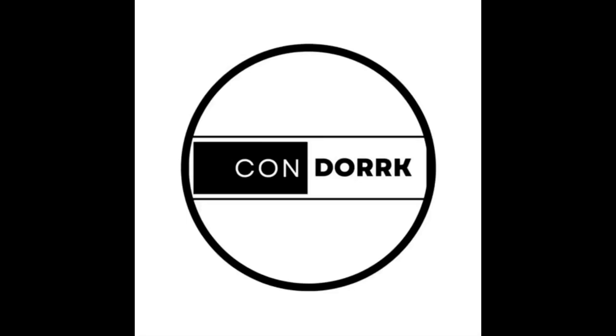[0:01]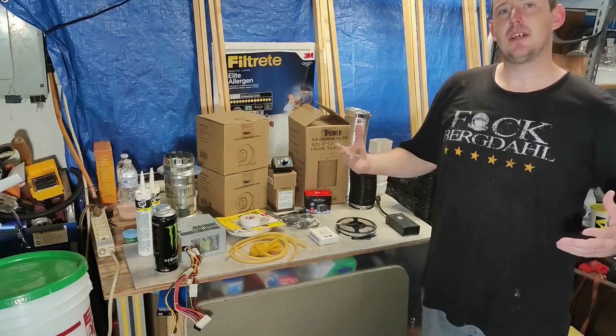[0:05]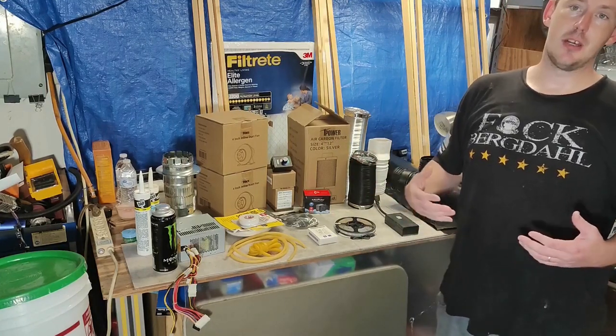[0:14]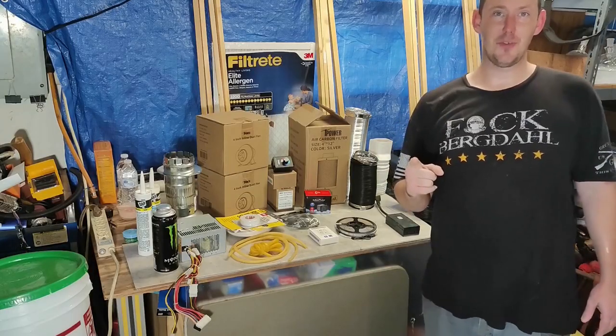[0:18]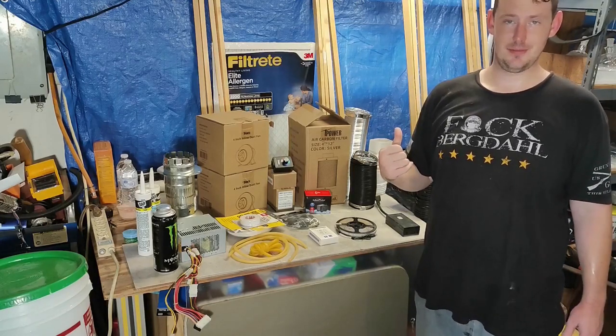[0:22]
So you finally got tired of the cops showing up over weird smells coming out of your garage or your closet. And you might be thinking, well, Connor, I want to practice chemistry. I just don't have the space or the supplies. Well, that's where a fume hood comes in handy. And today, I'm going to show you how to build one really cheap.
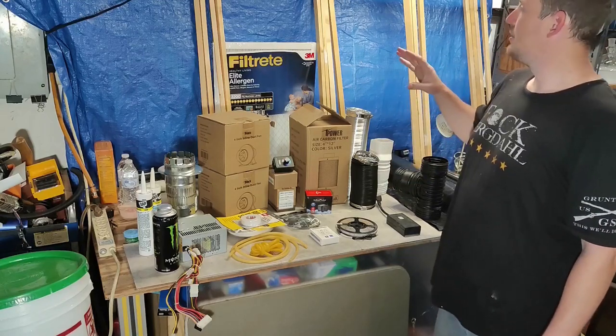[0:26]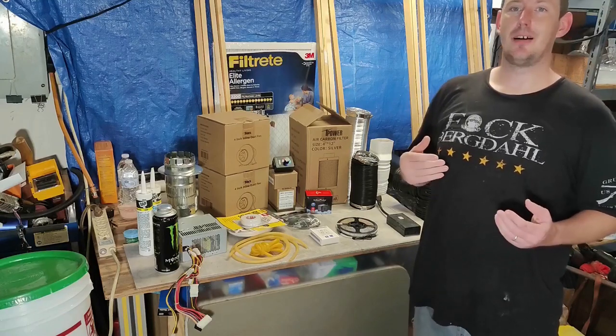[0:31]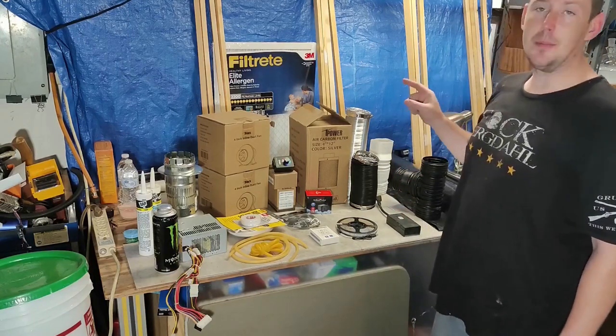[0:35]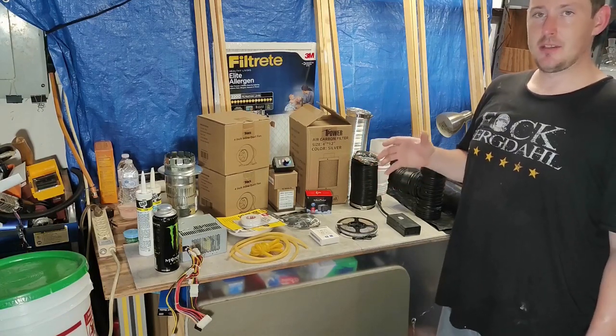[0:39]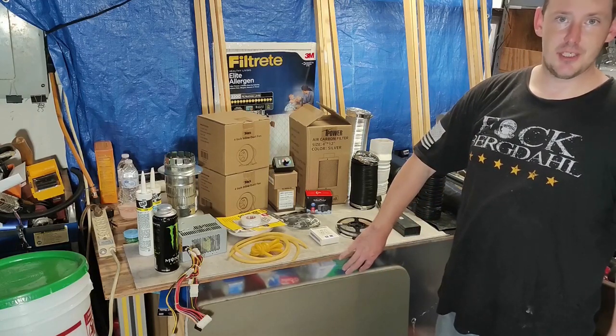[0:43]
A couple basic things you're going to need are different sizes of wood. If you can get a fully enclosed cabinet, that's great. I don't have it right now. So instead, I'm just going to be framing in a wood box that's about 3 by 3 by 5 feet, and then enclosing it in plastic and plexiglass or Lexan for the front.
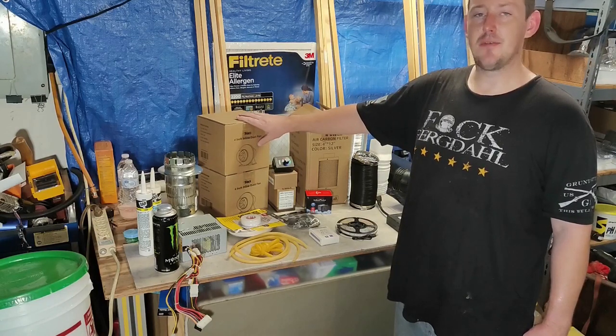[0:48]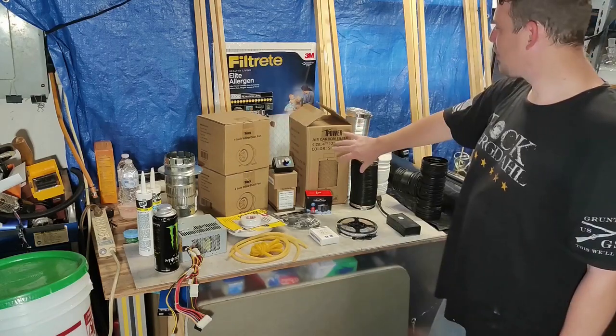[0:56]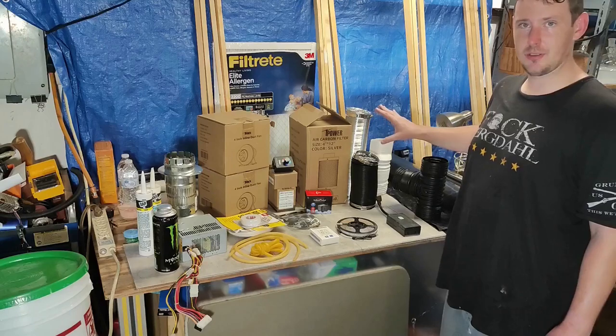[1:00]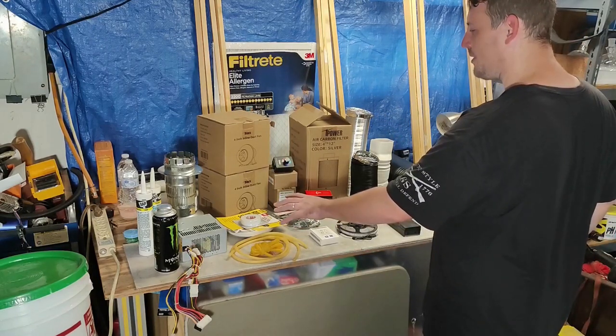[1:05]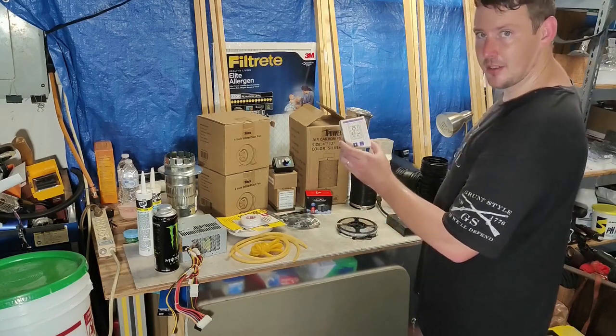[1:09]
You're going to want a fan or two. The higher the CFM flow, the better. Airflow is everything when it comes to a fume hood, because without moving air, you're just doing chemistry in a box. I have a carbon filter. I've got about 38 feet of ductwork to route it out where I want it to go. I have the rubber window seals, LEDs and mounting tape, a thermometer and hygrometer to keep track of what's going on inside the fume hood.
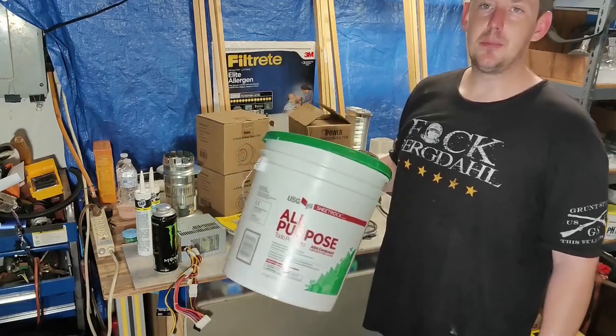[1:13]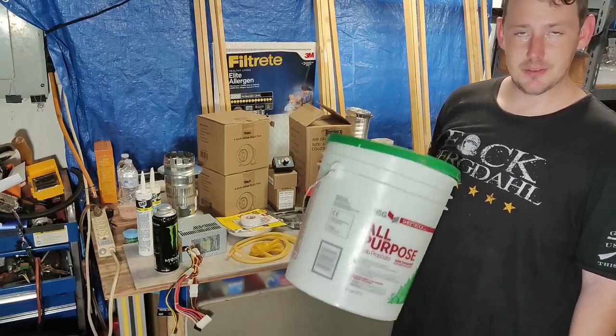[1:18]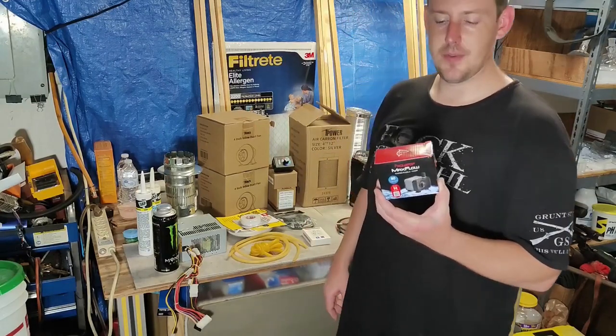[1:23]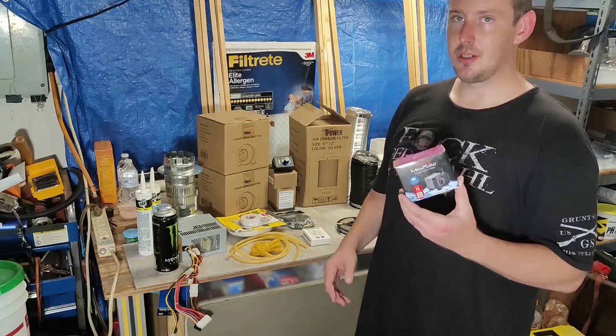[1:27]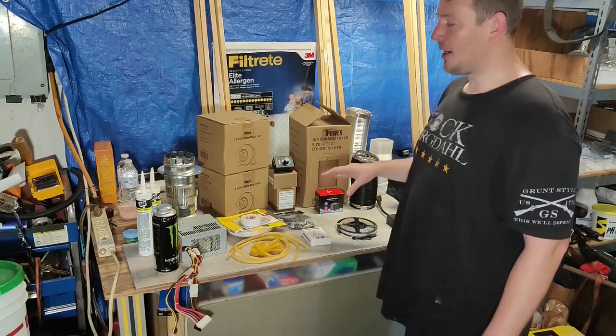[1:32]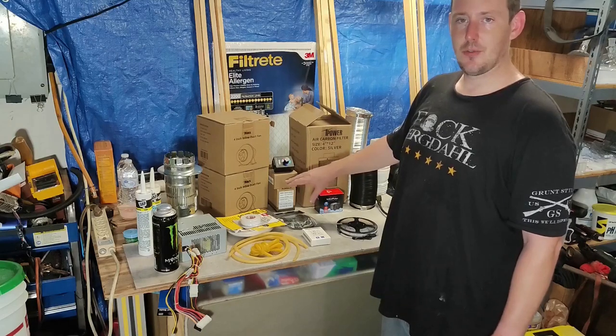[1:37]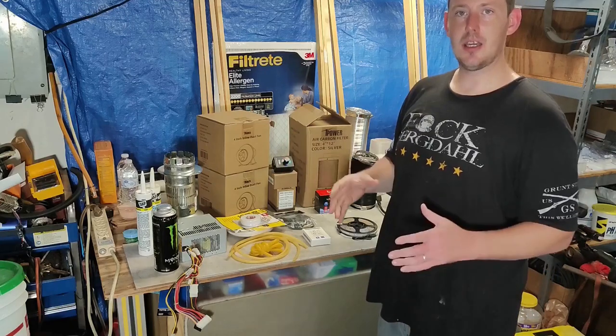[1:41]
You're also going to want a clean bucket. If you want to run clean water in and out, you're going to need a vessel to keep it in. So I'm going to be using this. And I also picked up a new pump. This one flows about 80 gallons per hour, which is good enough for most things I'm going to want to do. In addition, I picked up a couple extra things. I have a fan speed controller, I have a temperature controller, thermocouple, and some heating tape, so I can make a heating mantle, and I'm going to be using that in a different video later on.
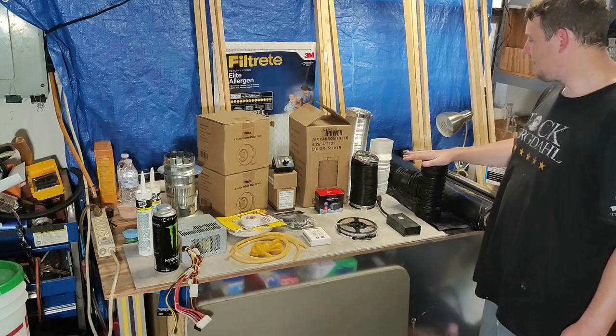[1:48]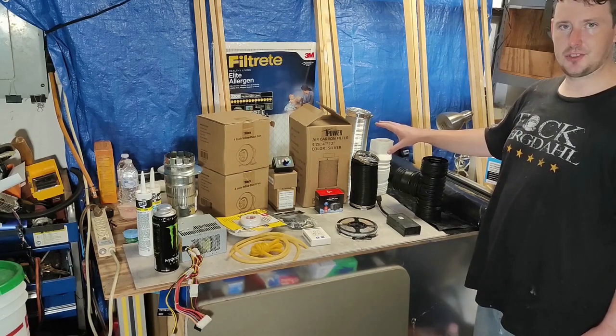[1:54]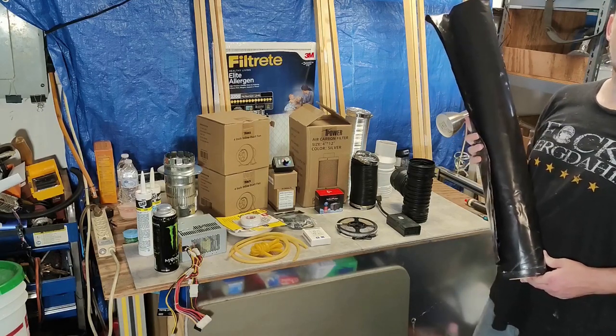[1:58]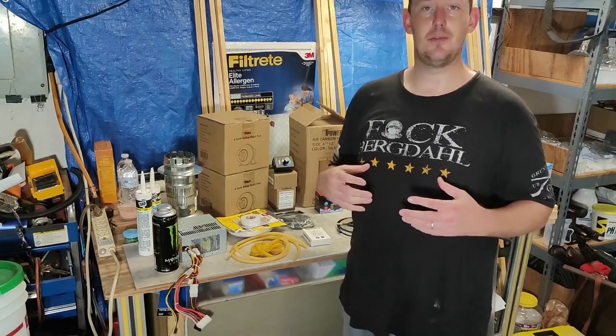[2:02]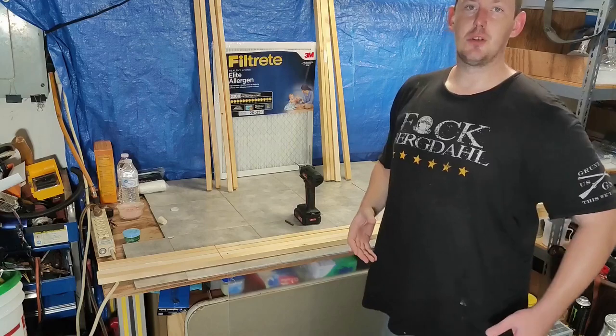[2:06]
As well, I have 4-inch plastic couplings to connect the ventilation system all together, and this plastic sheeting is going to be the sides of my fume hood. Of course, you're going to want something to be able to connect the fans into the fume hood, and that's where these come in.
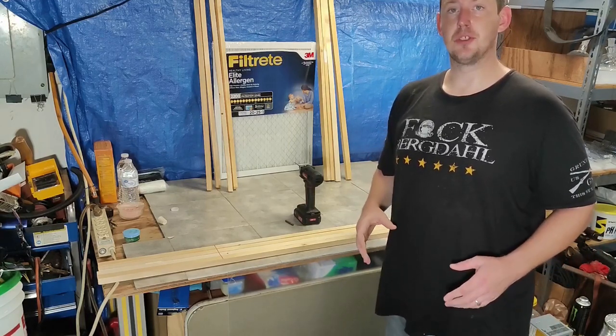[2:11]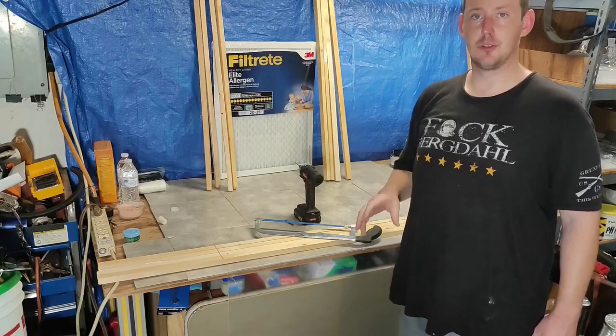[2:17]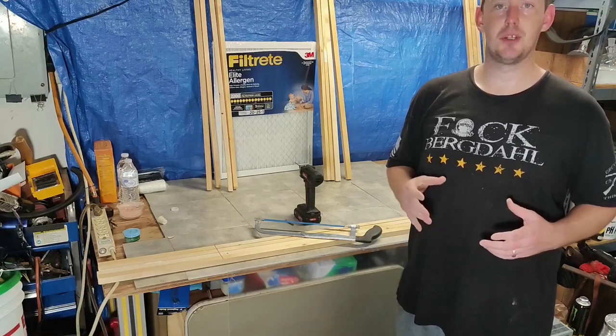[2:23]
Now, the first thing you're going to want to do is measure out and cut the wood that you're going to be using for the box enclosure for the fume hood. You're going to need a few basic supplies. I would recommend grabbing a drill, something to cut the wood with. And now the first thing you're going to want to do is measure and cut the wood for the dimensions of the fume hood you're going to make.
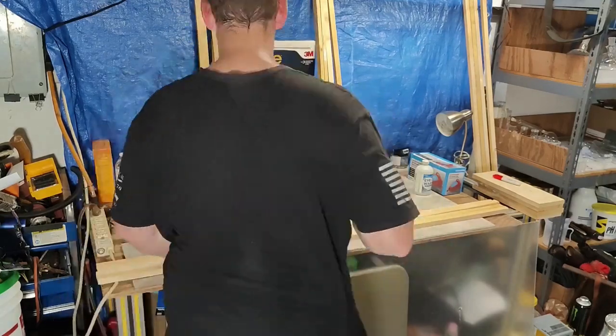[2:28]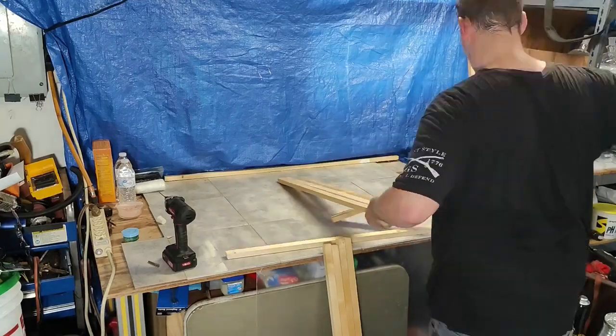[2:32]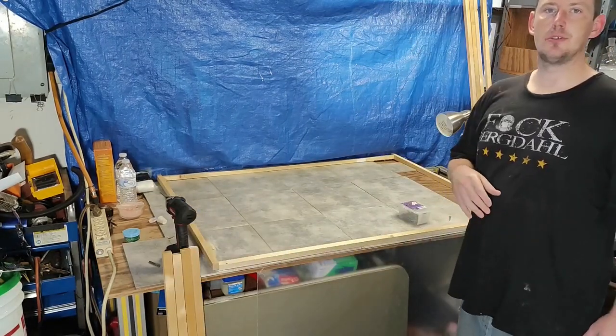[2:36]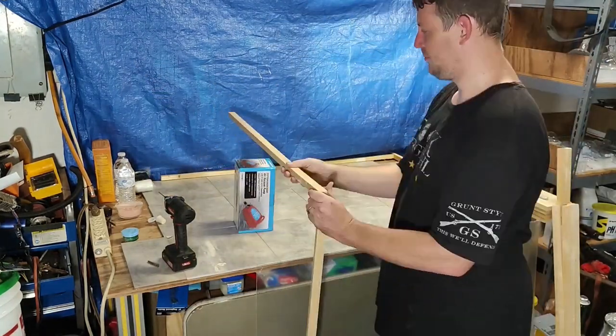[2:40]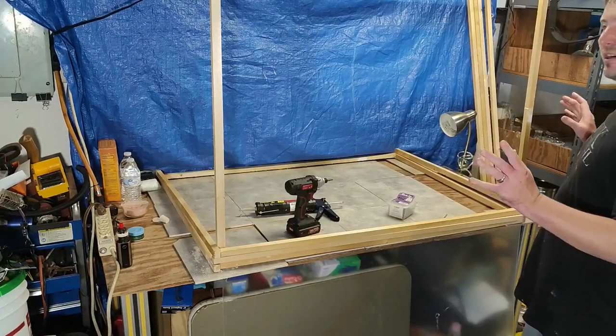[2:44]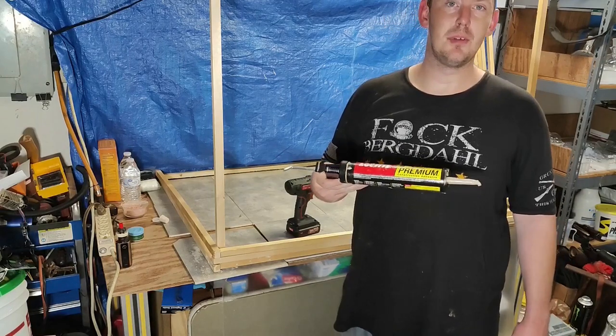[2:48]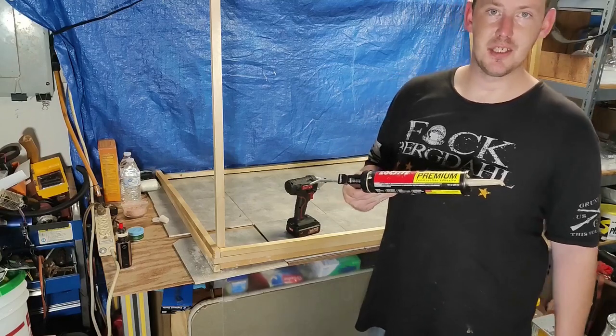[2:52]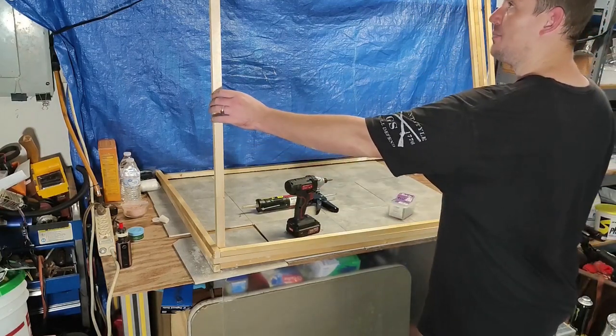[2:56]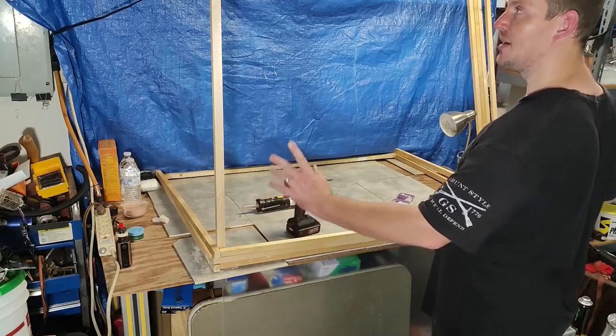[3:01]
Next, you're going to drill your holes and install the screws on the first layer. Make sure as you go to keep everything as even as you possibly can. I'm using Loctite Premium in between where every screw is going to keep everything nice and tight together. In addition, screwing it down, and go ahead and put two going up. Start the top piece to keep them in line.
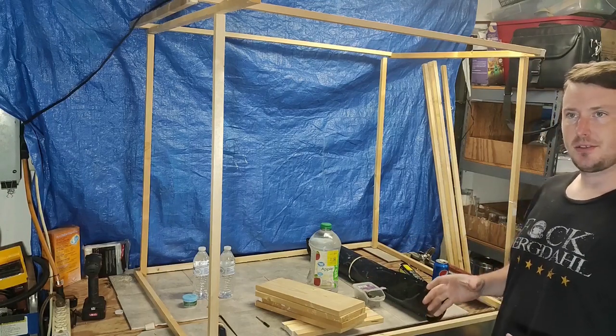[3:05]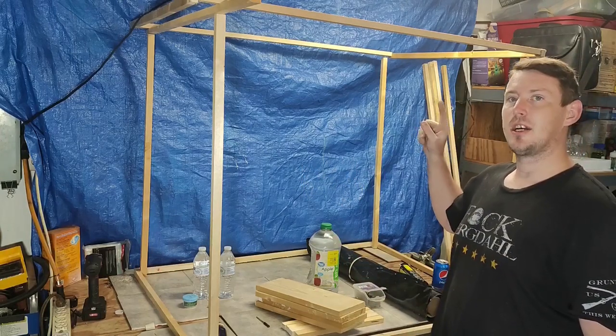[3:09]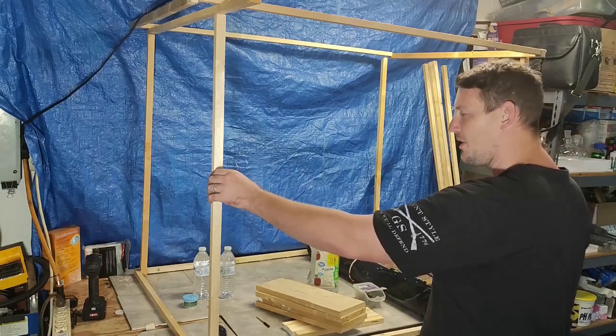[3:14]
So you build your square base, then you build another identical base, four support beams going up, then you're going to attach your second to the top. The Loctite adhesive is finally dry. I put it in all four sides, so this should hold pretty well.
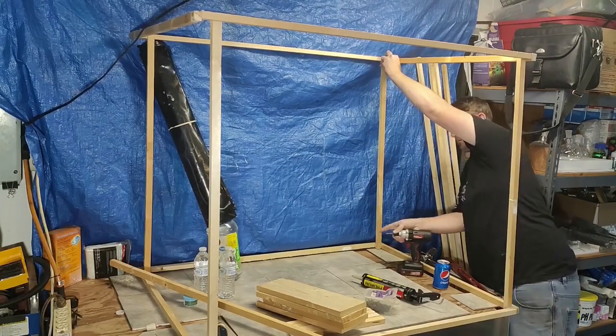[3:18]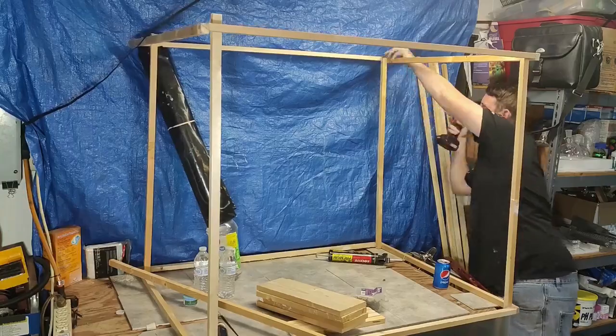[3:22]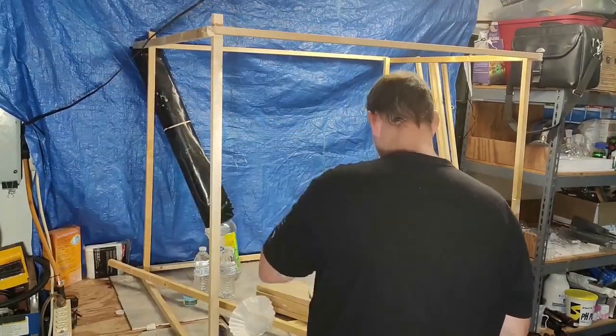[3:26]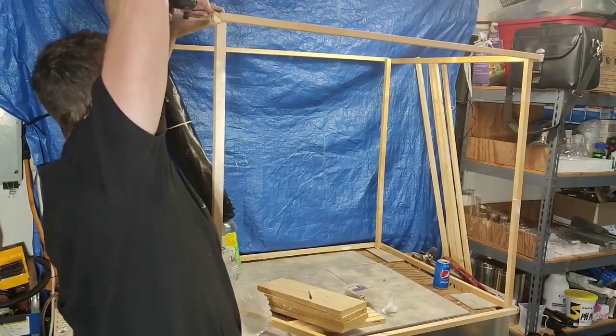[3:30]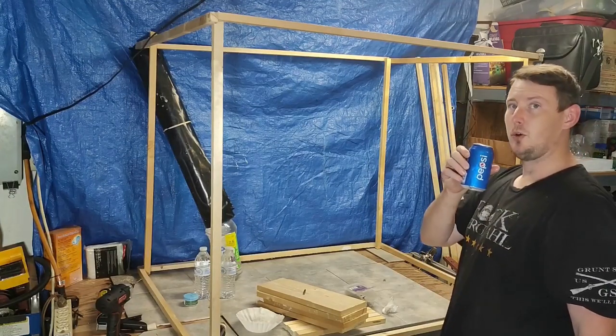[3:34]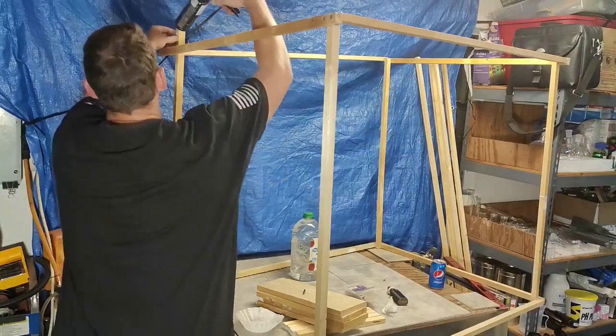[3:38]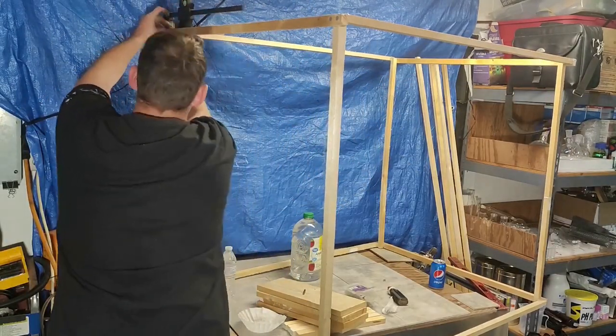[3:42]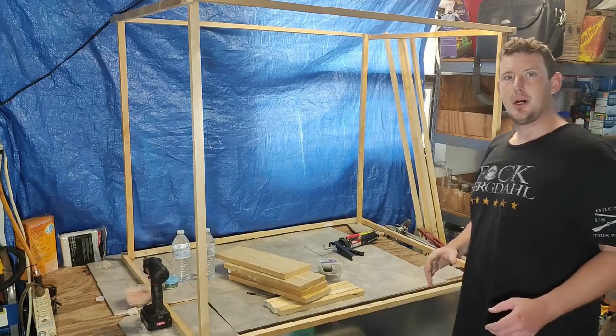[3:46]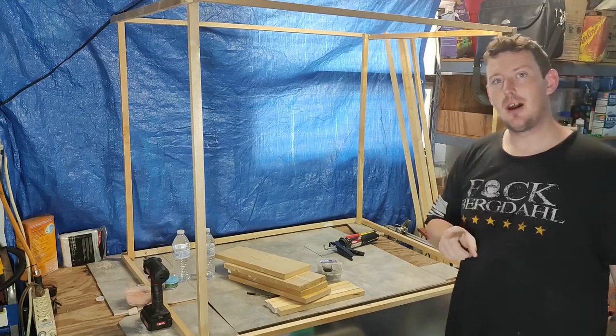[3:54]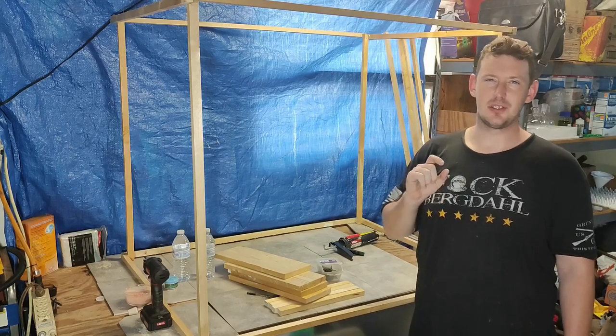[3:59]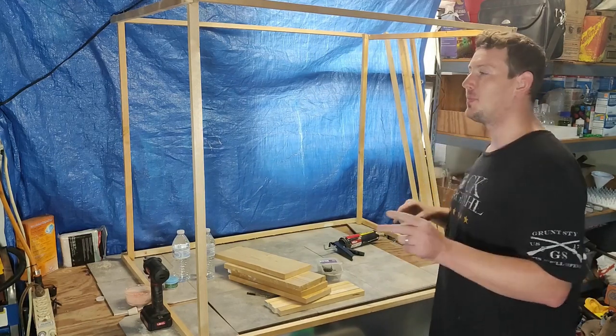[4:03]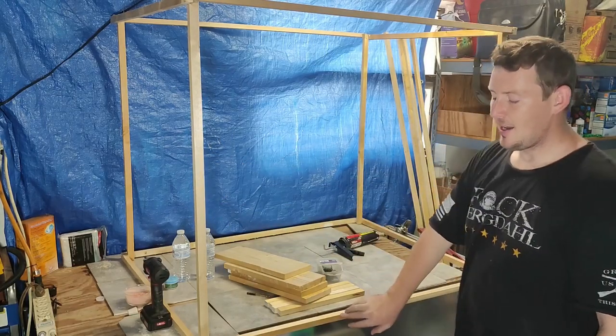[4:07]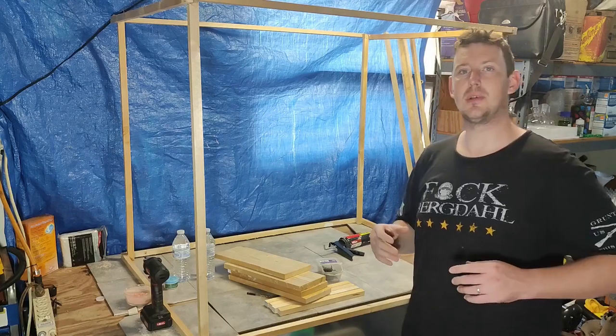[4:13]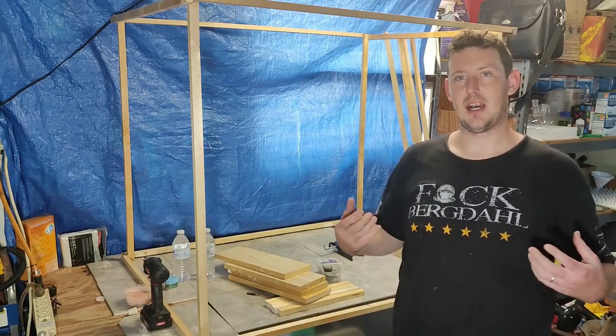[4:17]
We've built two squares, one for the bottom, one for the top, and we've installed four sides. Now what we're gonna do is add a space for the fans to go, and we're gonna need just a little bit more wood for that. We're also gonna need two extra pieces of wood about the same length as the height, and that's to wedge in our plexiglass. We're gonna wanna keep a nice tight seal on it, because again, the whole point of this is to keep fumes inside from getting out.
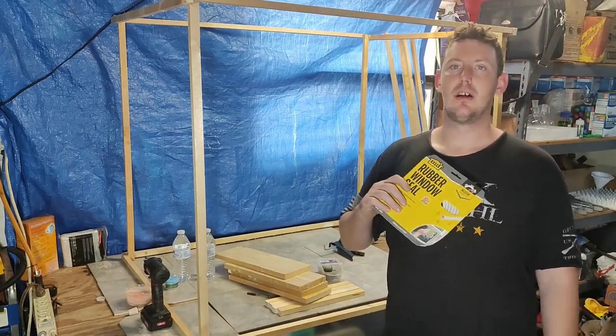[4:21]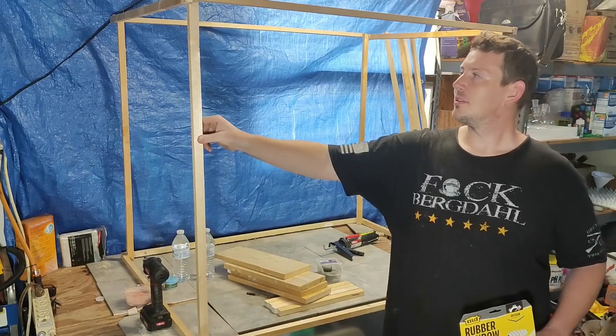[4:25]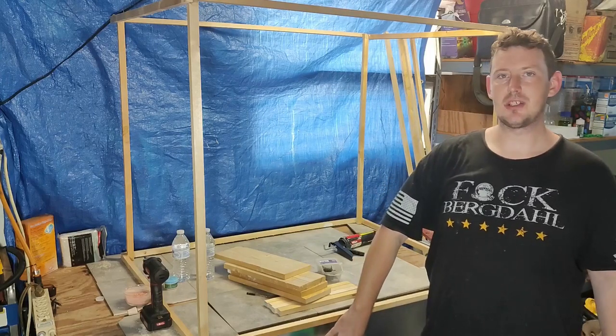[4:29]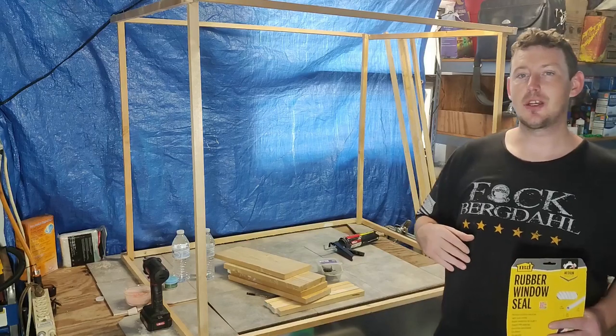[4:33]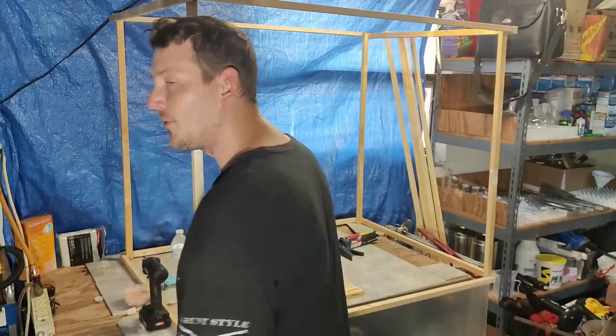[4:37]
So what I did was got rubber window seal, and we're gonna put that on another piece of wood on the inside in between the plexiglass and the actual fume hood. Hopefully that'll keep a nice seal for us that'll keep fumes inside. But before we do that, let's try and get the fans in.
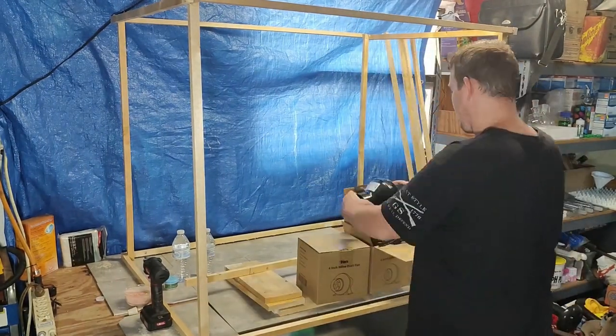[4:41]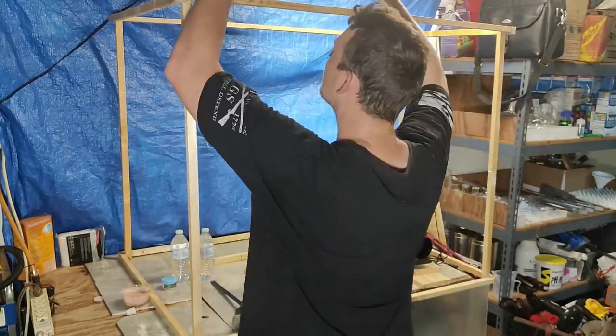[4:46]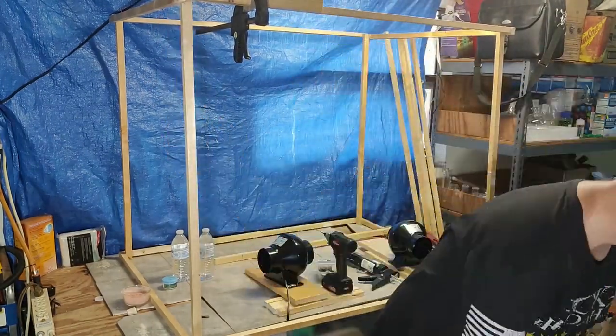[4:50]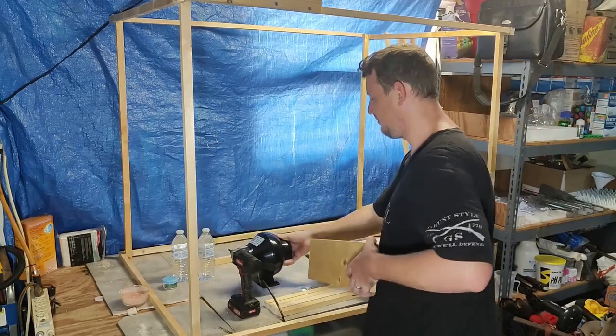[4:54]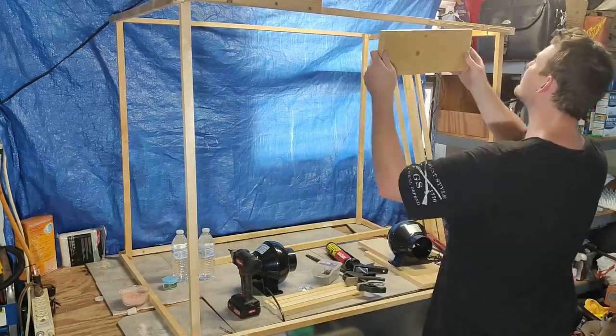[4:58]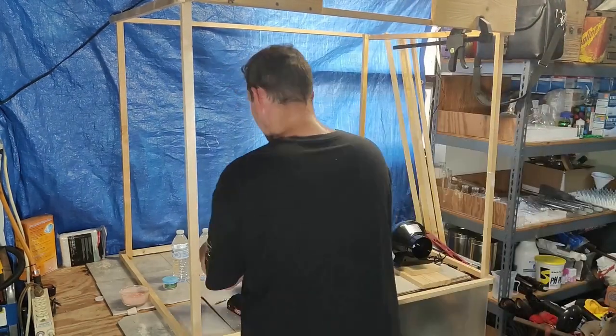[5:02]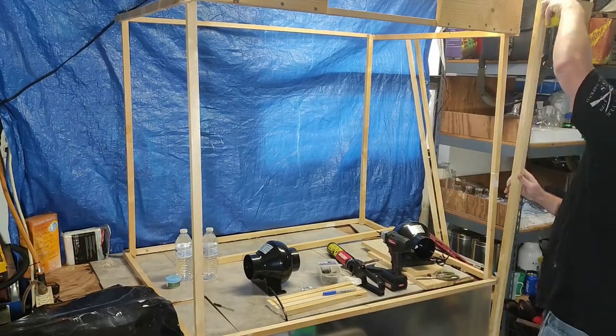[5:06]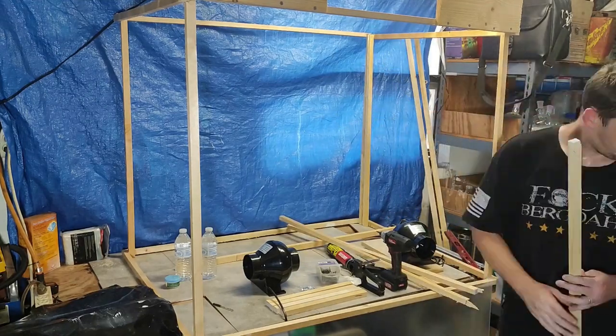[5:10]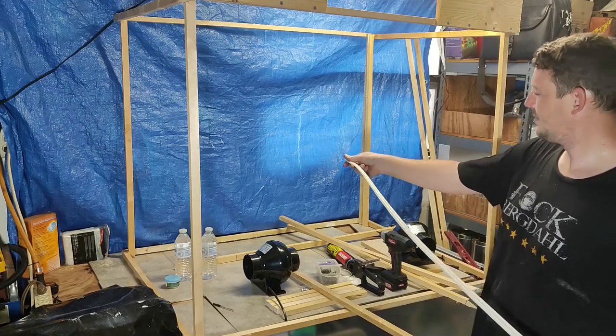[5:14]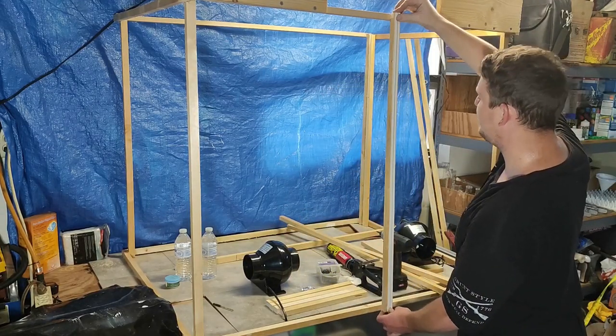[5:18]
On the other side, length of weather seal. And before you cut, make sure this fits in your box, just in case.
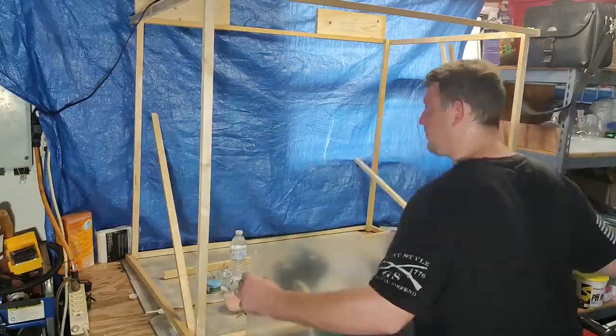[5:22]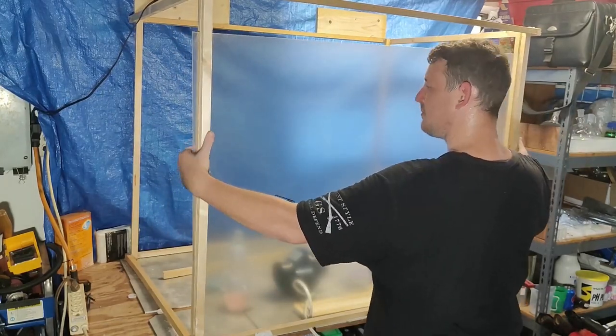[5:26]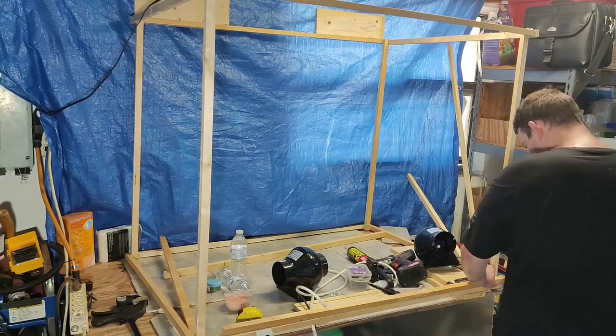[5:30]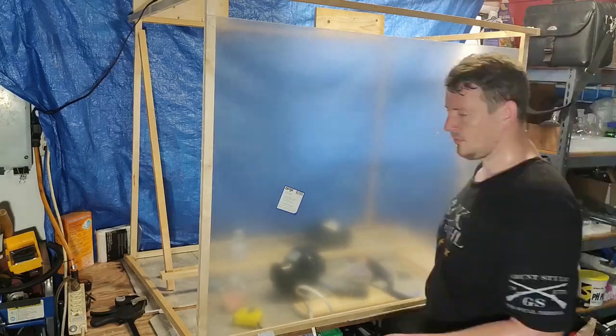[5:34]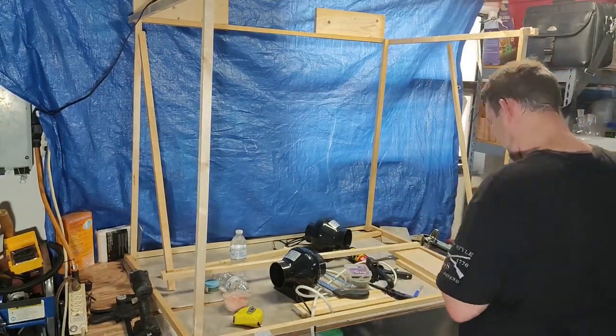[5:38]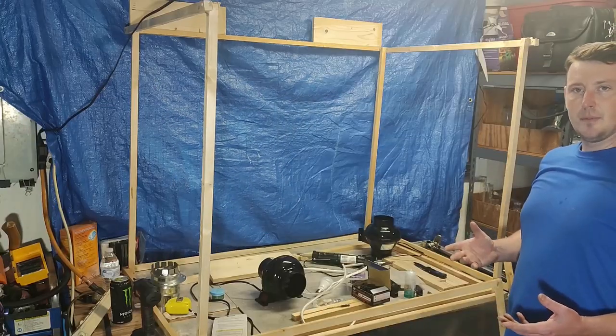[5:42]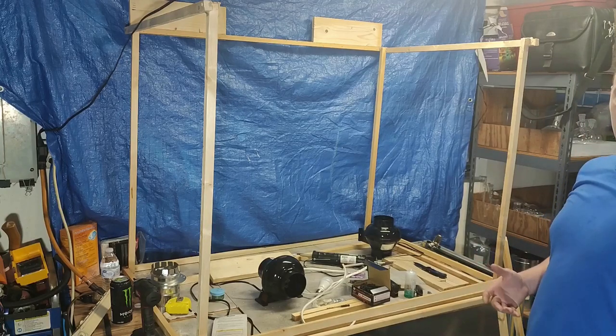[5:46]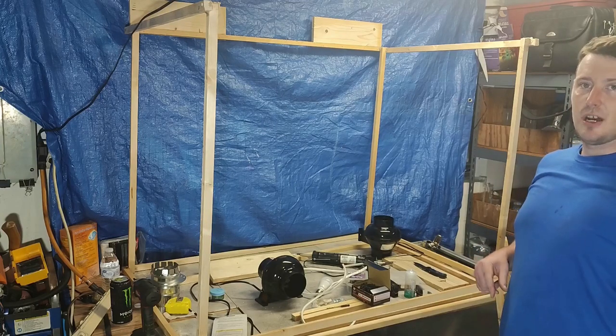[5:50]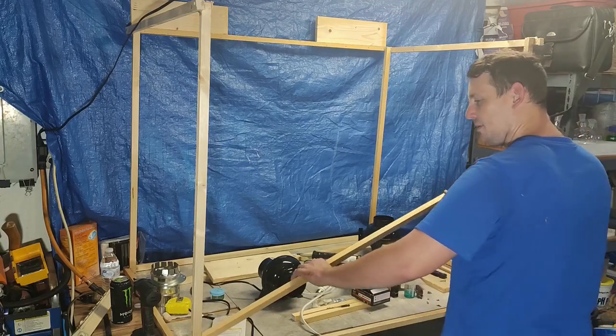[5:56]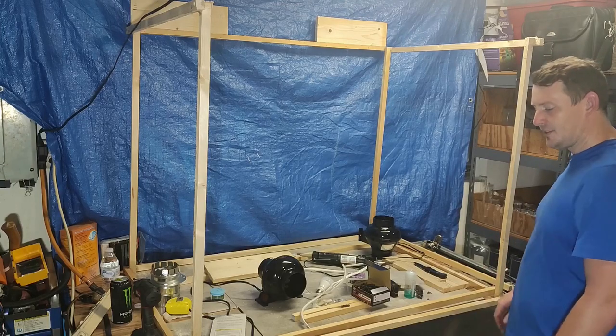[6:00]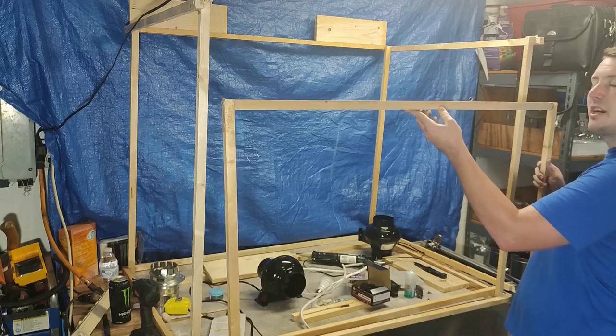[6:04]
So now the main part of the box is built and your adhesive is dry, your screws are in, you have something a little bit more stable to work with. Now we're going to create a slide for the front and we're finally going to start sealing it in. Starting off, we're going to add a second piece of wood right behind the front two pillars, and that's going to be to support the plexiglass. Then you're going to make a second frame to go behind it, and it's going to sandwich in the plexiglass so it has somewhere to slide and keep it in place.
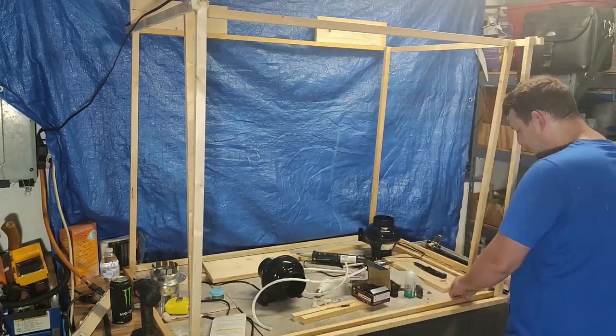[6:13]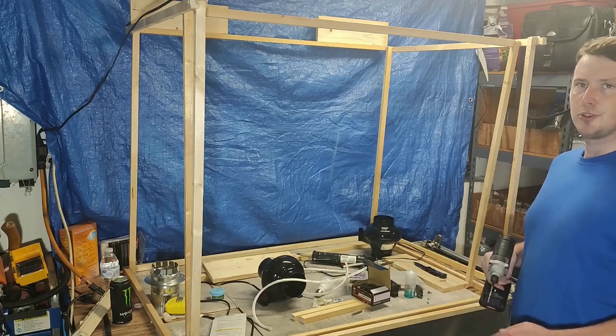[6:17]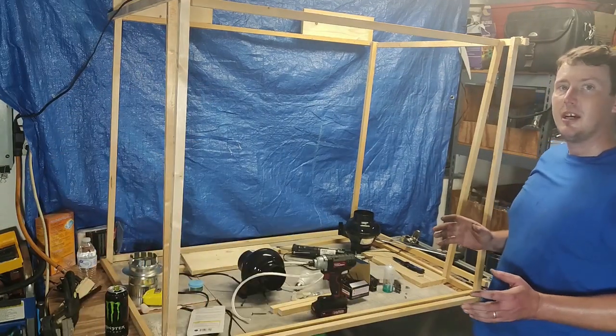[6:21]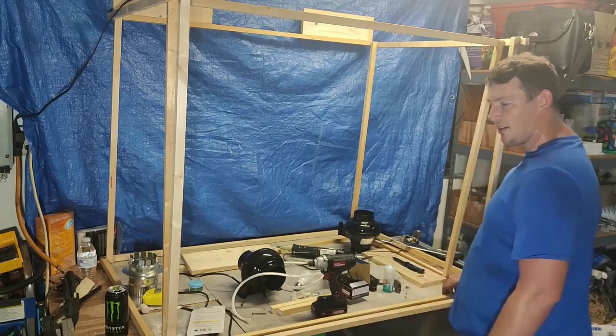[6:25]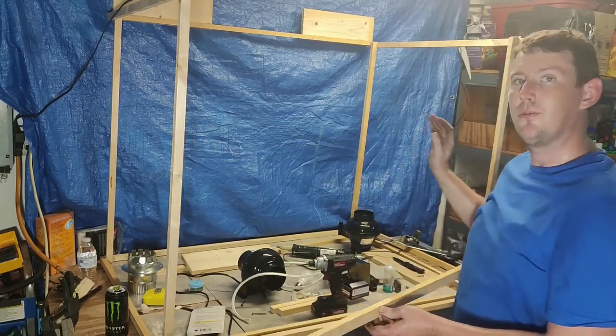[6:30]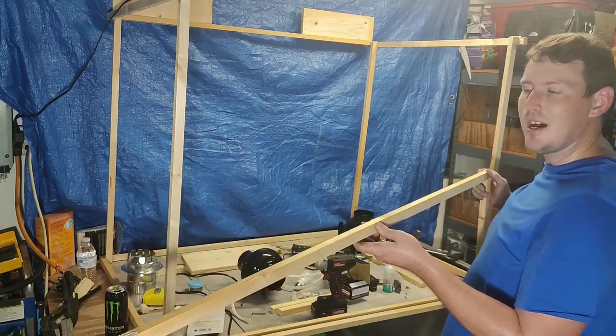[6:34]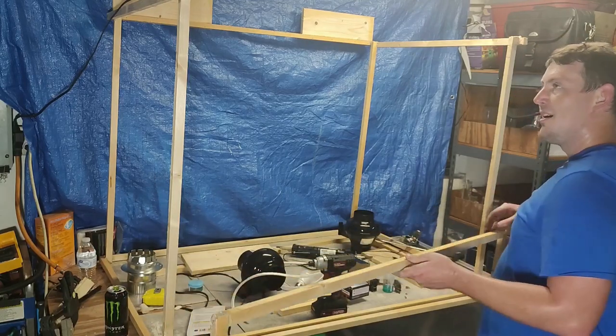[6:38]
Now that both sides are level and in place, we're going to put two screws just to make sure it doesn't go anywhere. So we've managed to get the frame built. What we want to do now is get a second frame, and what this is going to do, it's going to sit behind these two front pillars, and it's going to kind of sandwich in the plexiglass with a seal so no air leaks through. And that'll also act as our guide channel for raising and lowering it.
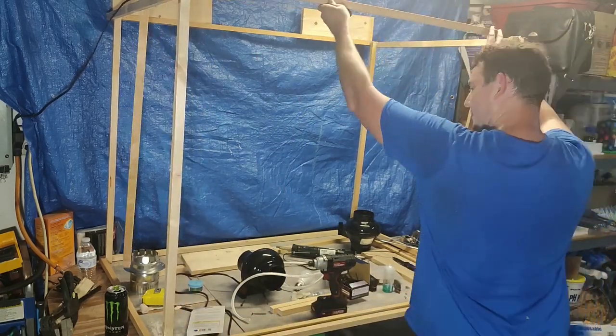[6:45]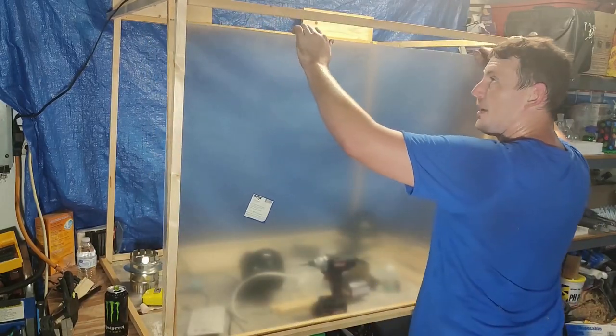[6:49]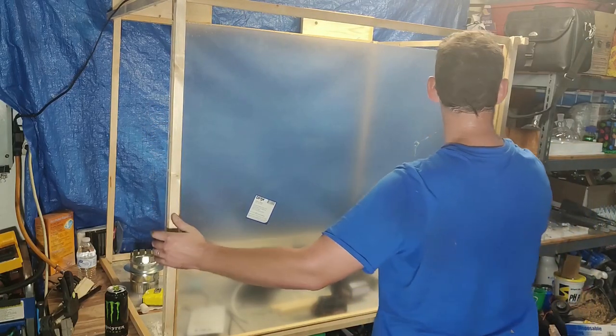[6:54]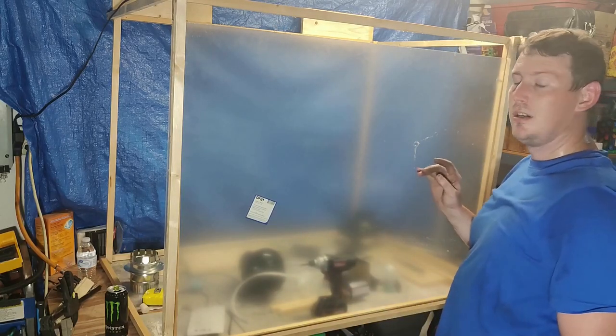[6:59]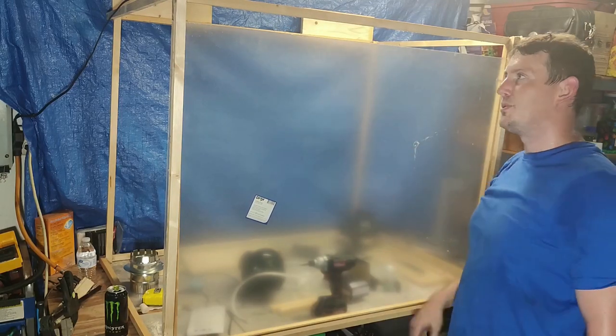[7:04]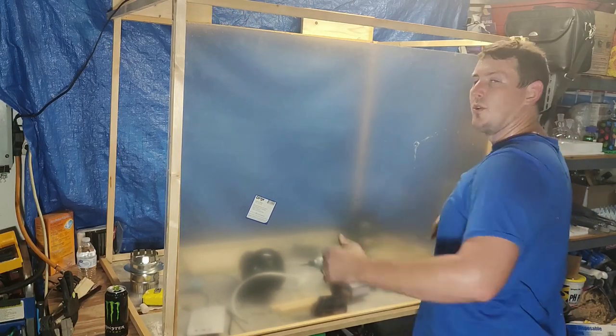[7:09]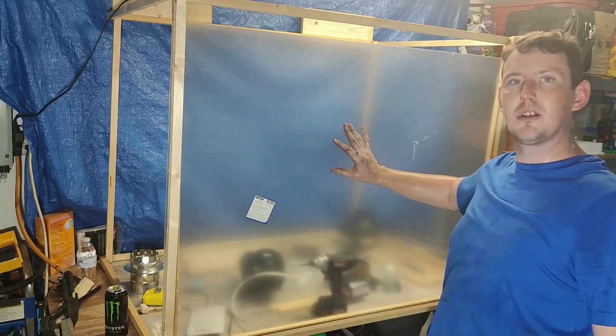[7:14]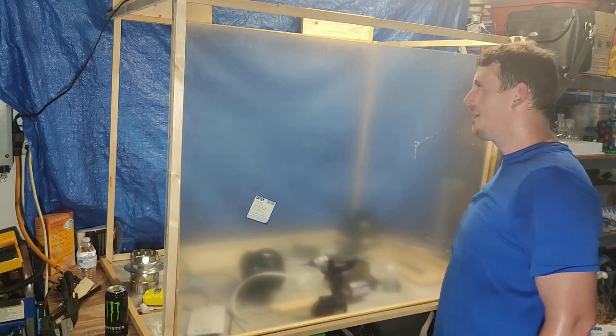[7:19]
So first, we're going to set the frame in, and then our plexiglass behind it. We're going to bring it in to sandwich it. We're going to mark how high the plexiglass sits so that we can install another piece just below the edge of this, and that's where our top seal is going to be. Our side seals are going to be on the one behind this, so that when the air is pulling from inside, it should suck the plexiglass to it and create an air seal, so you don't have nearly as much leaking air.
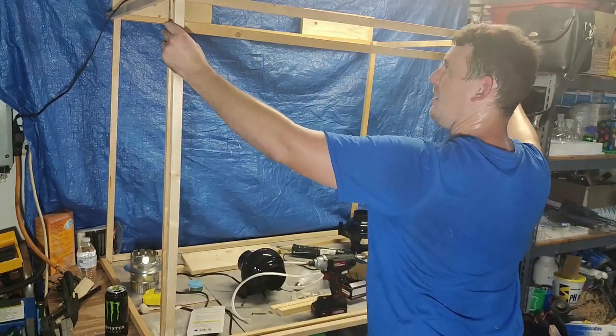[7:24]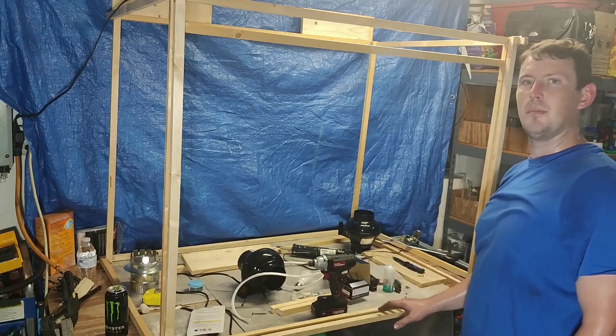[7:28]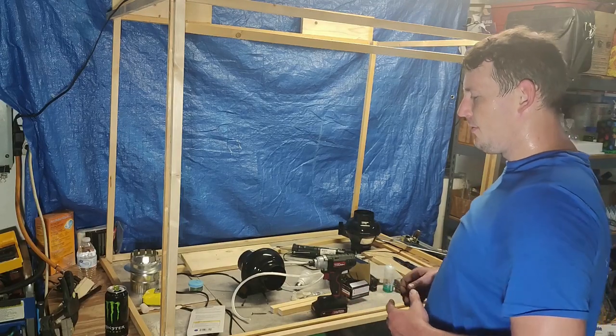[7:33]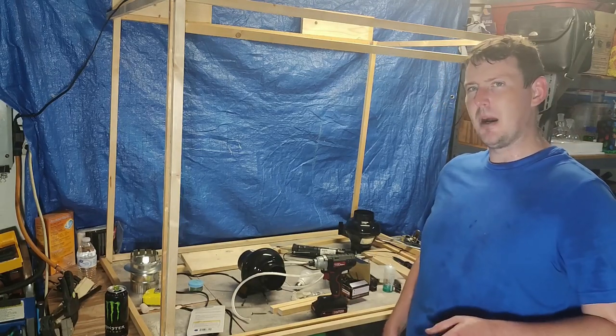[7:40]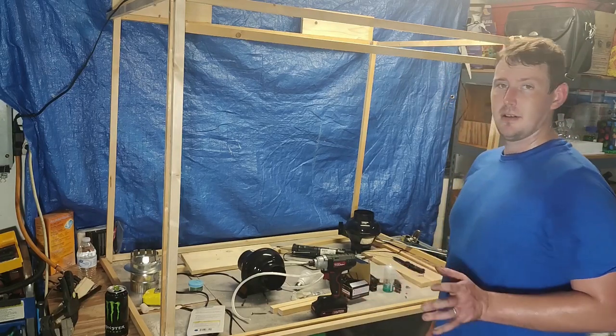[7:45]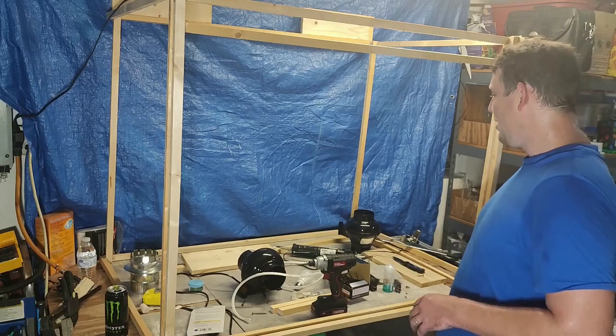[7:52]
Now we'll have this shape, and we're not so worried about completely sealing the bottom because that's where we want all the air to pull from. They have a term for that, and it's called face velocity. And you want that to be at a minimum of about 100 CFM. Here, and these are weaker, but I'm using two 200 CFM flow exhaust vent fans. And hopefully that should do the trick.
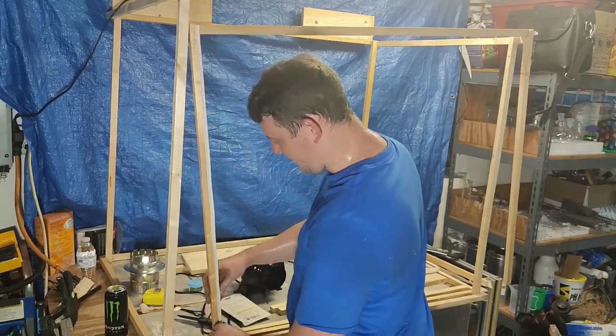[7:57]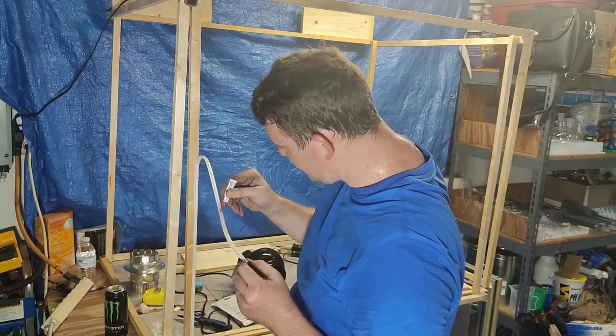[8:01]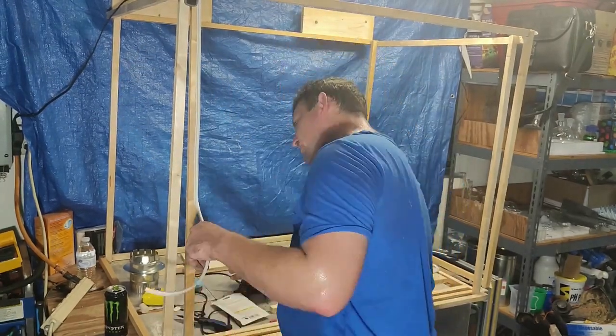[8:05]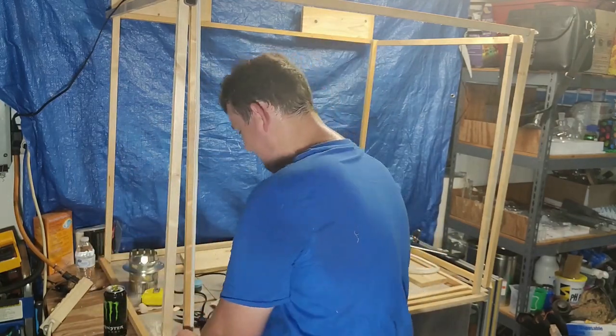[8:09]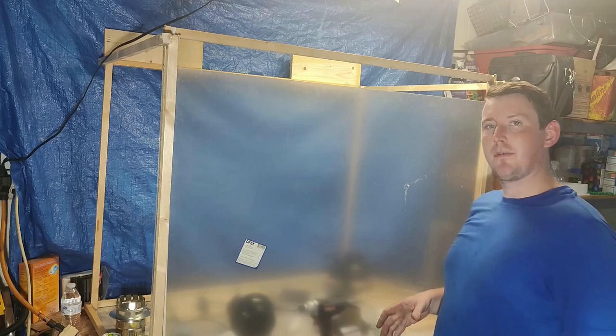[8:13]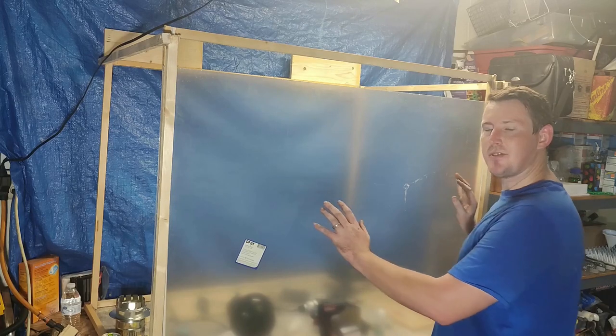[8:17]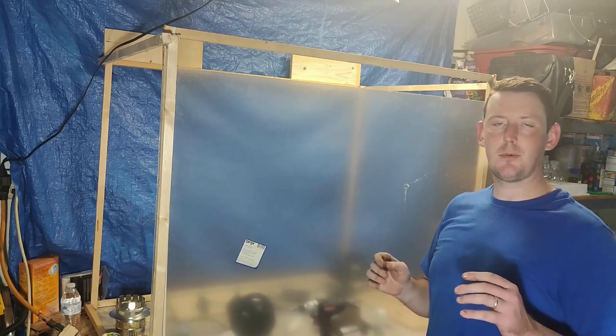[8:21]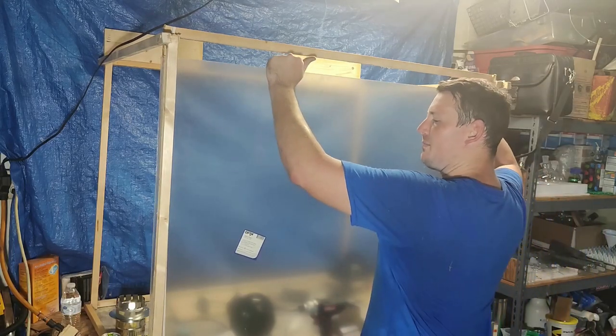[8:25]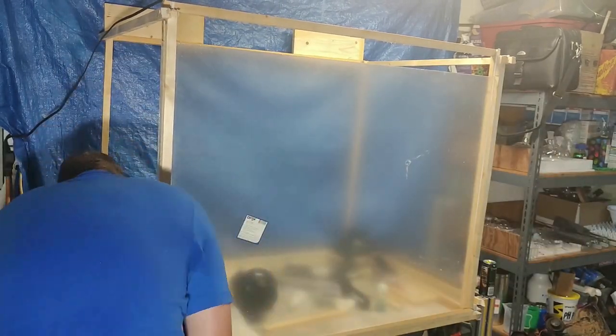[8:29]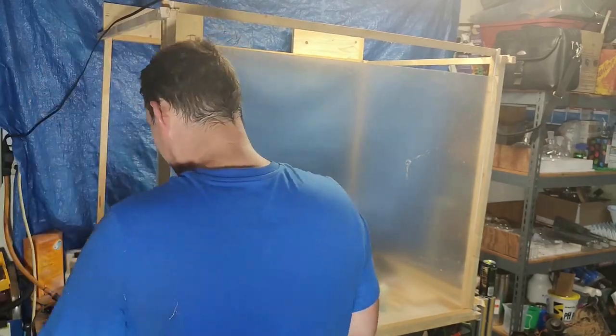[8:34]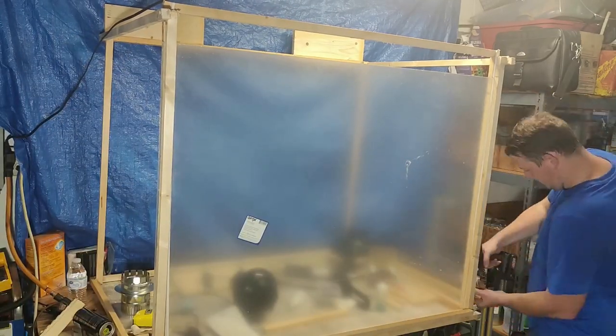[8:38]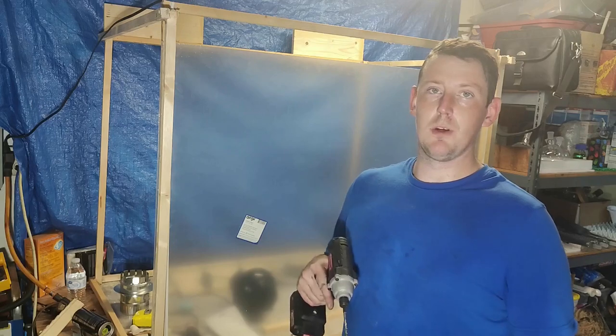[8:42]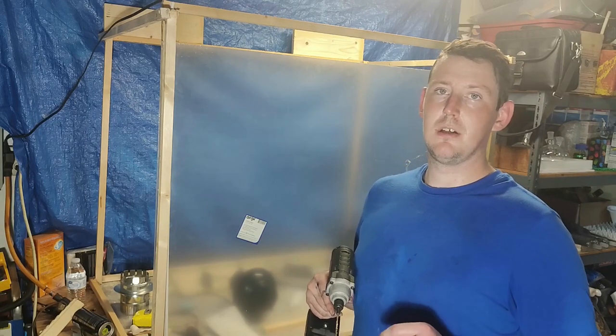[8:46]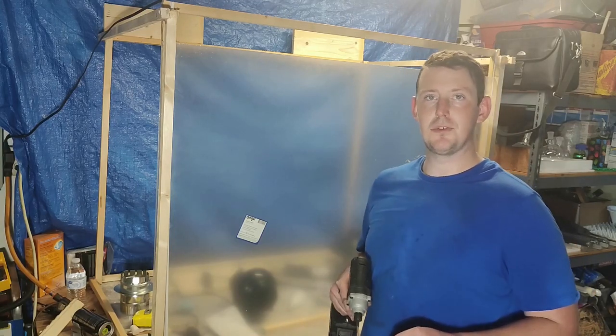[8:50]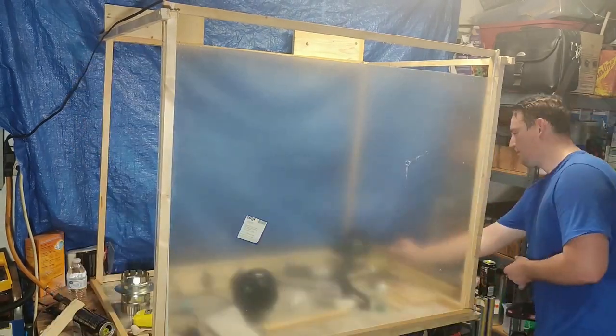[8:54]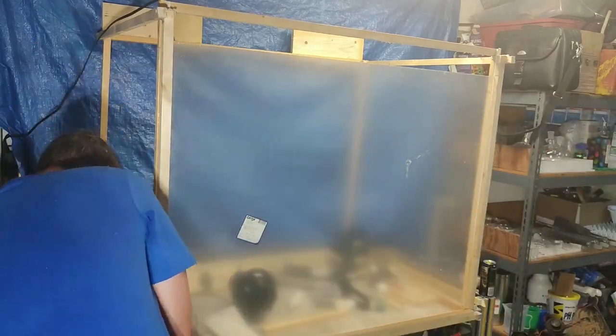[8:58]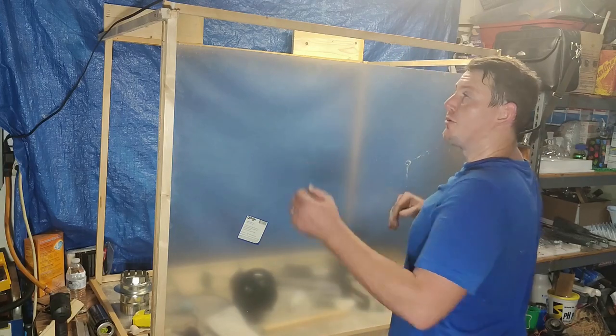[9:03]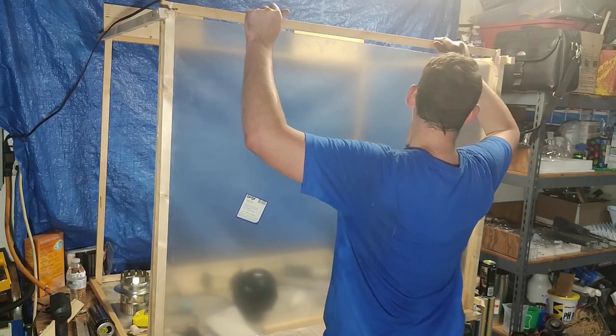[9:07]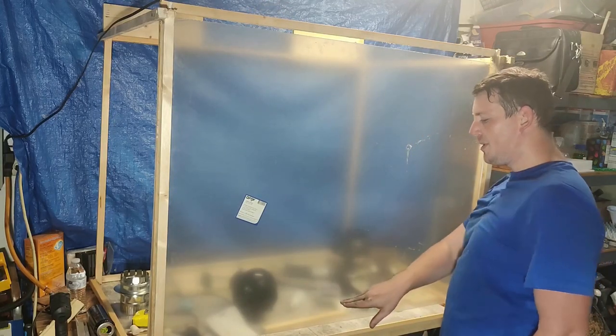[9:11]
Once your seals are dry from the glue, the next thing you want to do is install the plexiglass. Get it to the point where it's pressing down and creating a seal, but not so tight that you can't freely move it. Be sure when you drill the holes into the rear frame, you're squeezing down to the level that you need to put pressure on the plexiglass. Otherwise, when you put the screws in, it's not going to be as tight as it needs to. And with those in, you should be able to grab it, lift. In my case, it's perfect because it holds itself, but I'm still going to be installing a handle for this.
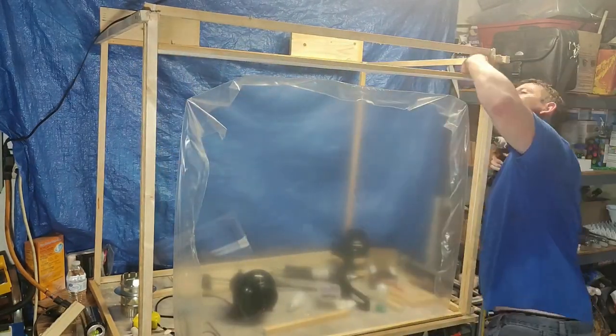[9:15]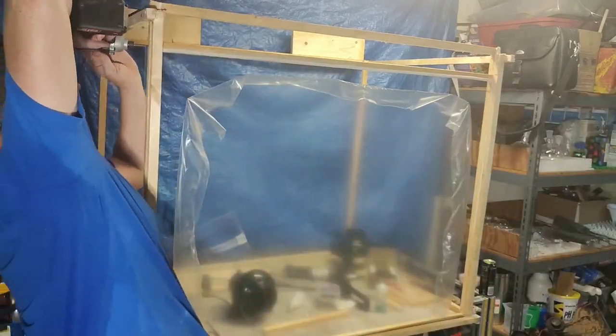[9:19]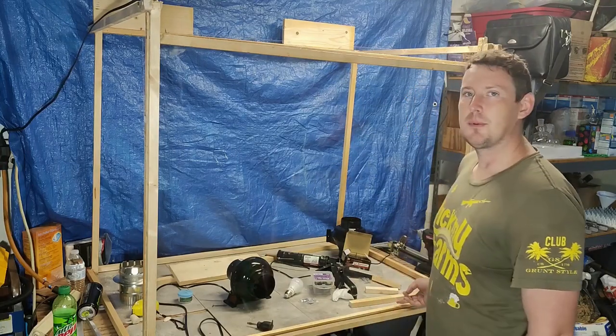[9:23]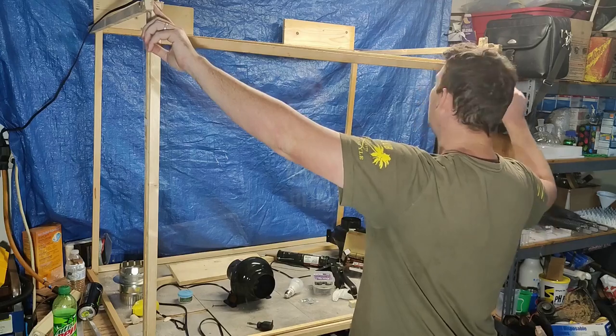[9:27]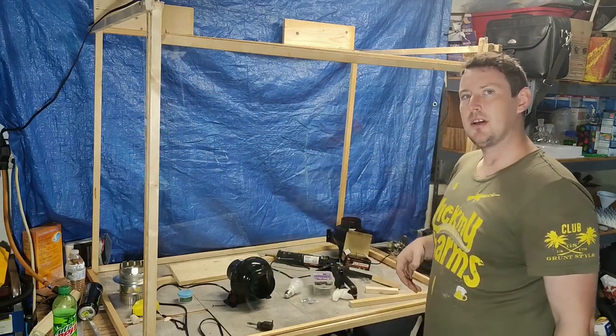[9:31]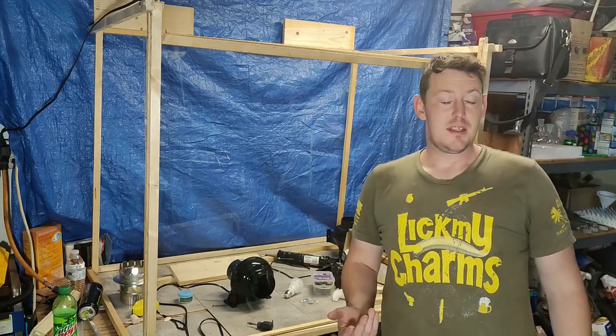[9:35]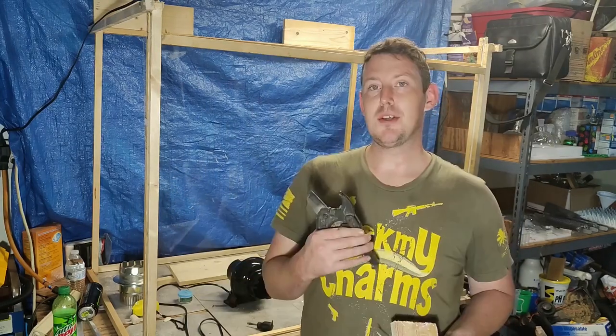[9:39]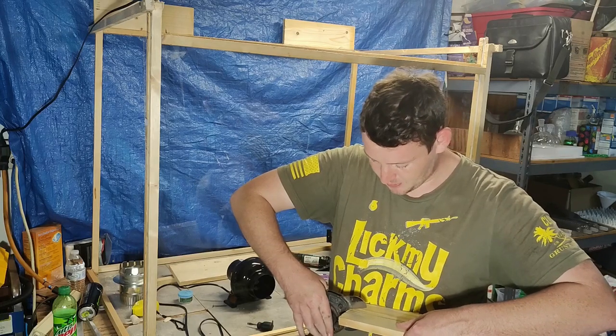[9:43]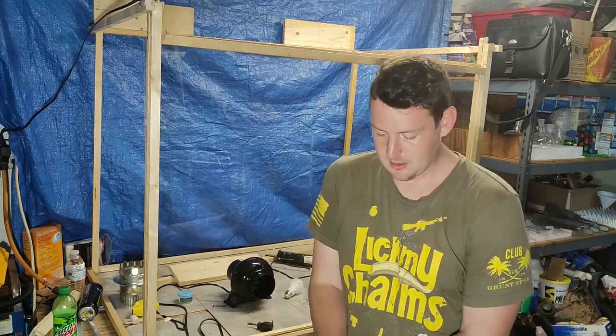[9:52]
Now, you might run into a problem where the corners of this either hit the edges or start to slide out because there's nothing stopping it from moving and shifting in ways that you don't want. So to remedy that, I've got this, a 1x6 board. I'll be using a set of PVC cutters to split the wood. So we should end up with a cut that's right about where we need.
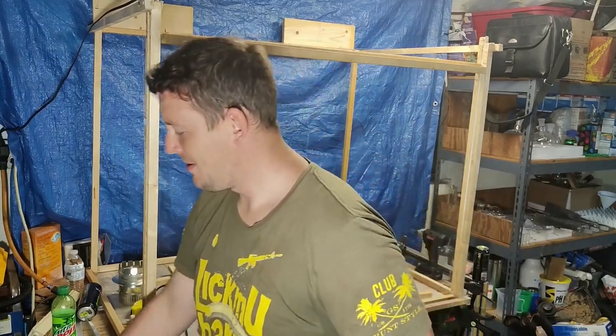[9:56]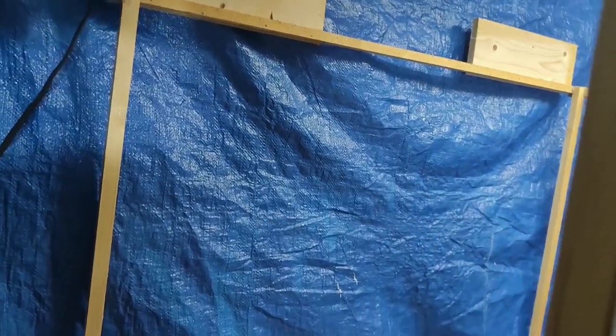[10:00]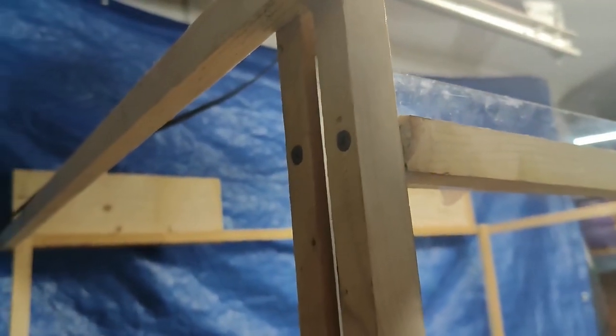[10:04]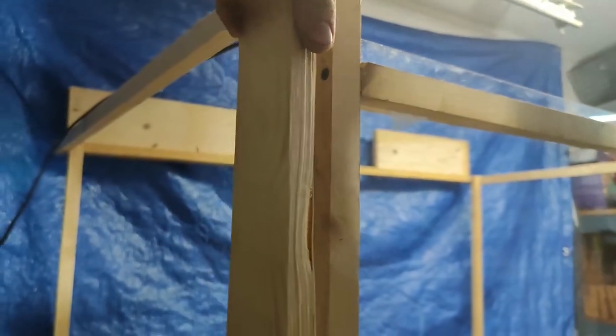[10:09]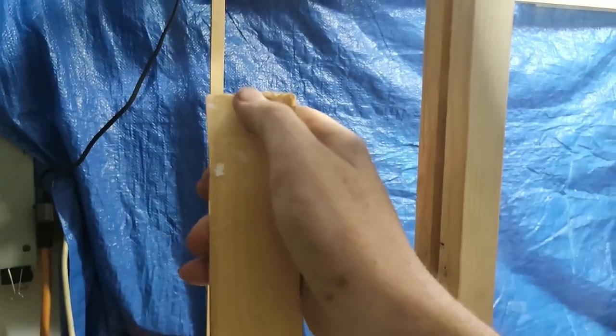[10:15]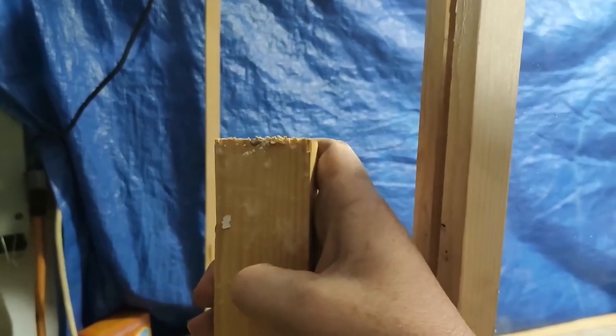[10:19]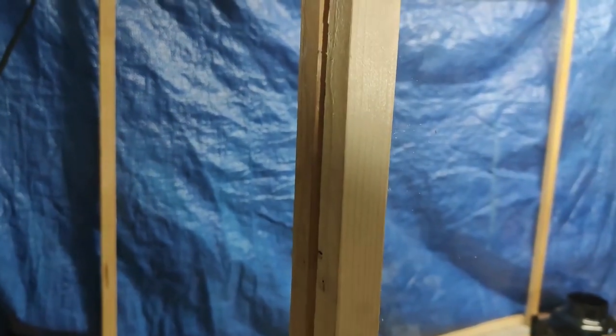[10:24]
Perfect. The plexiglass is coming out and interfering with the corners of the wood here. So we're going to lift it back into place. We'll be basically using one of these to install over. And if you really like, you can use a router tool and cut a small, shallow groove if you can keep it straight for the plexiglass as a kind of guide.
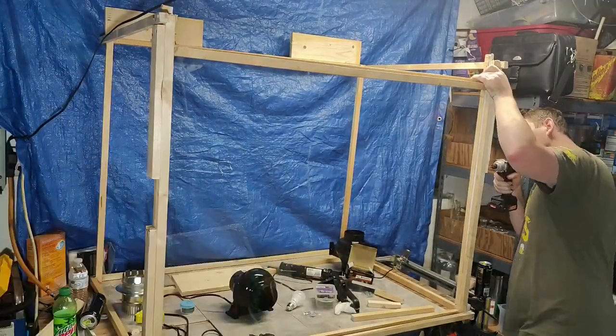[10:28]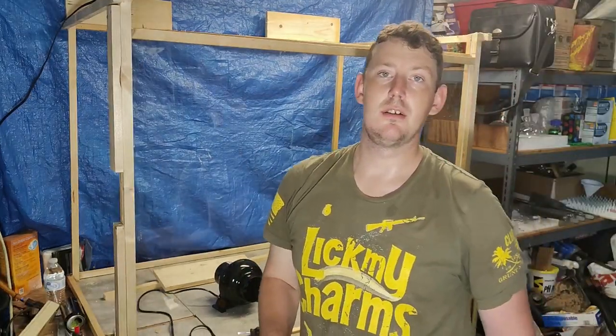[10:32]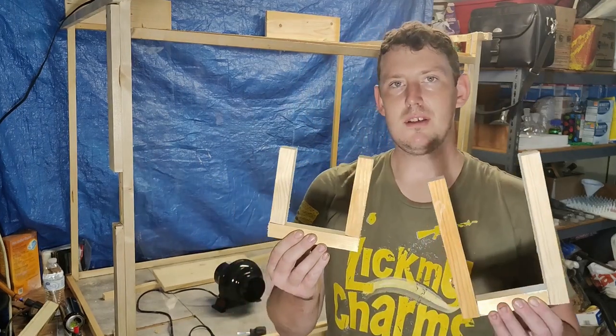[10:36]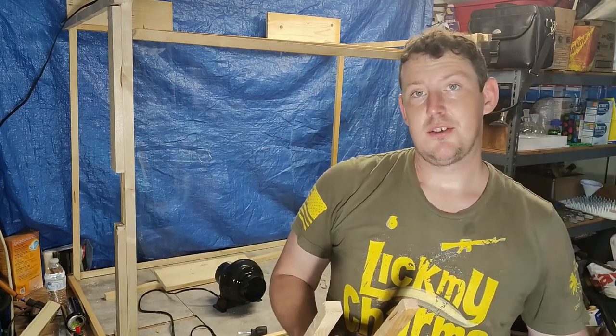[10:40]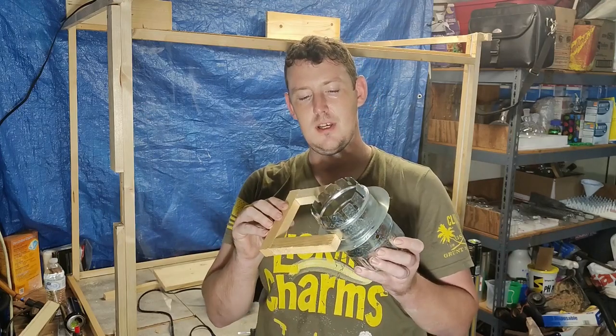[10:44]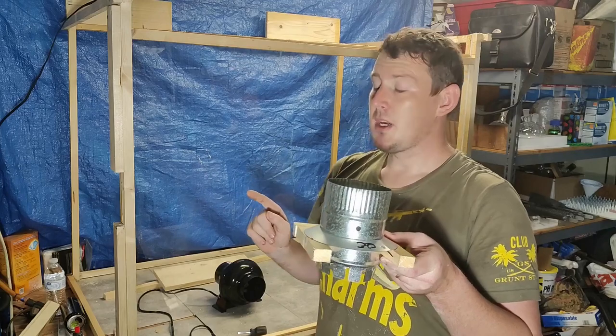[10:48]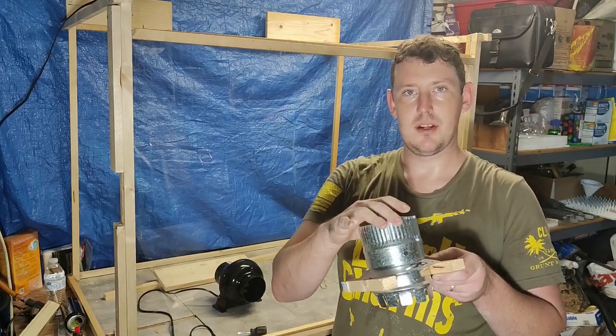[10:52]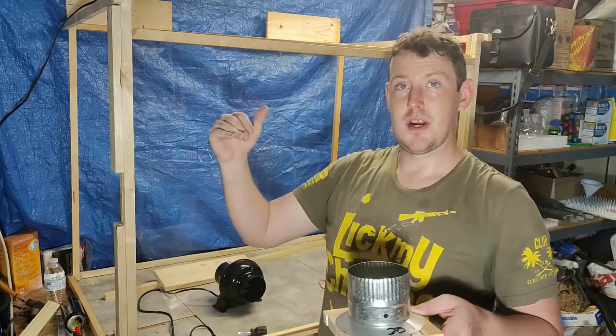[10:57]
Another thing that I've done for the ventilation of the fume hood is I've made these two 4-inch U-shaped pieces. And what these are going to do is they're going to hold the 4-inch vent adapters, and they're just going to sit in. These will be mounted to the frame, and then there will be a 4-inch hole cut using this template, and that'll be through the actual cover that I have to enclose it.
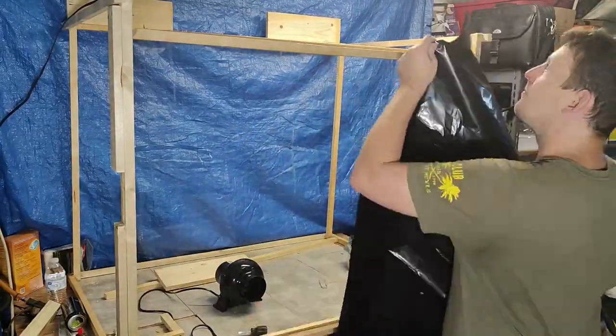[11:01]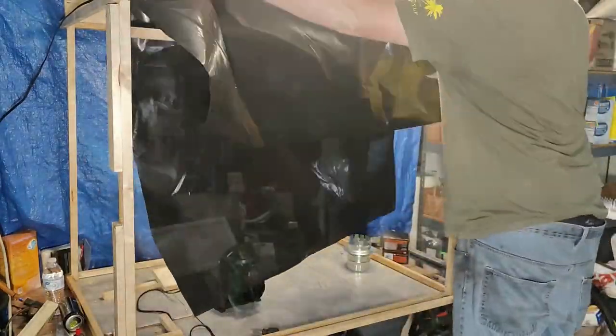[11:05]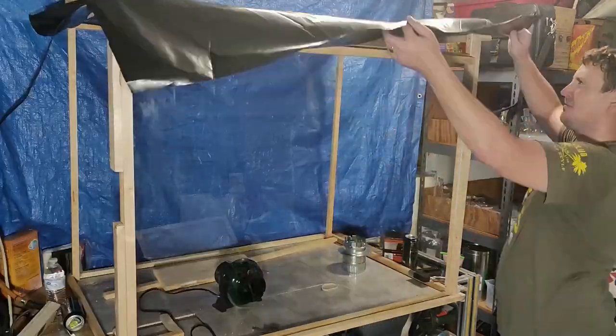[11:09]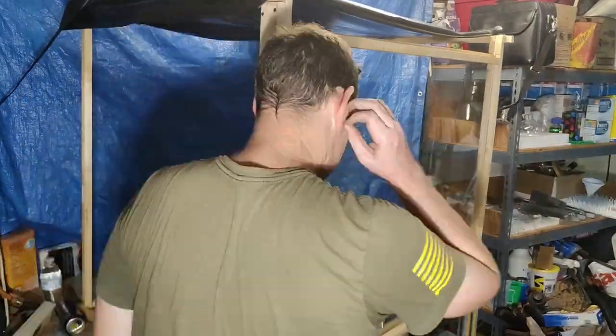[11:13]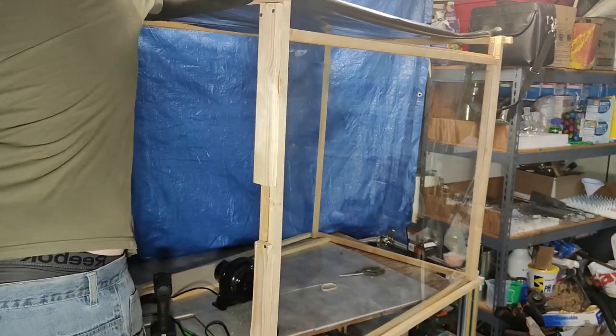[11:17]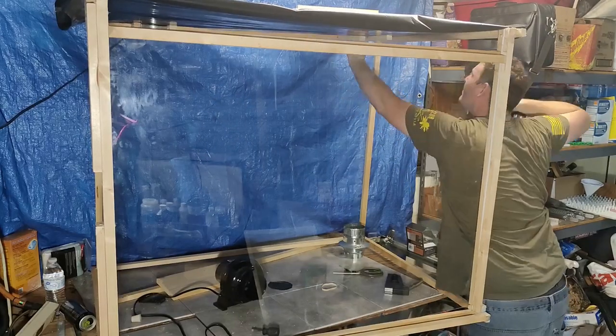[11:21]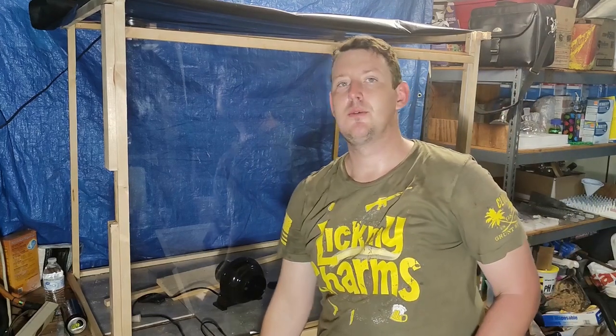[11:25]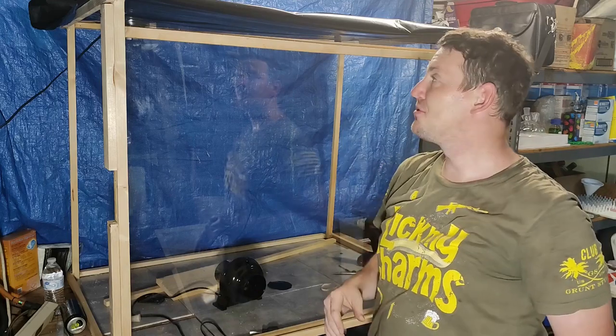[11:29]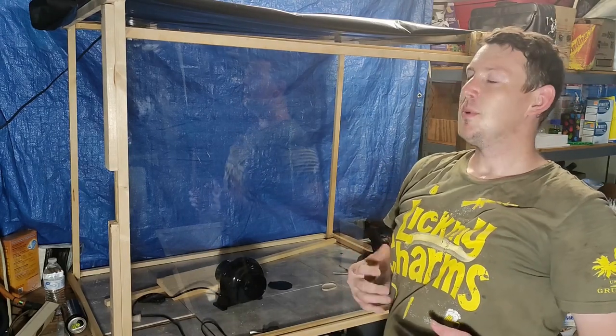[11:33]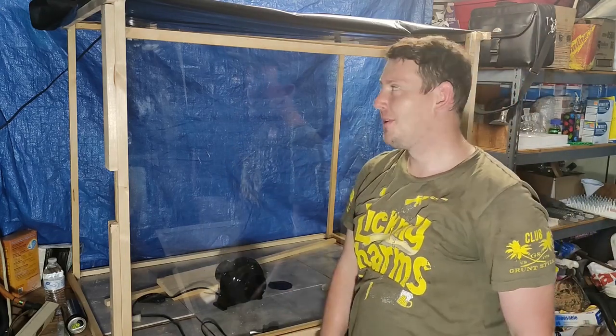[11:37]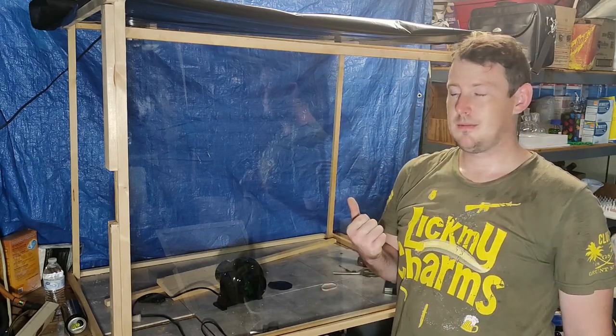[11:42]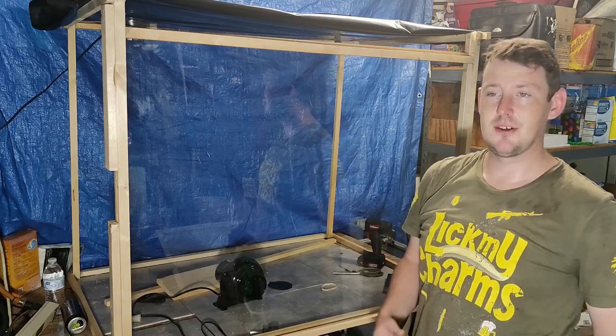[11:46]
About this time is also usually a good idea to go ahead and throw in your lighting system. I'm going to be using stick-on LEDs, but it's nice to be working and still be able to see what you're doing inside. So I'm going to go ahead and do that now. Also really good to make sure that you seal around the fan access into the fume hood to make sure that there's no leaking air.
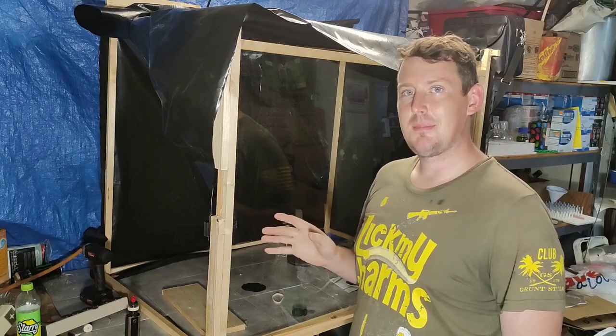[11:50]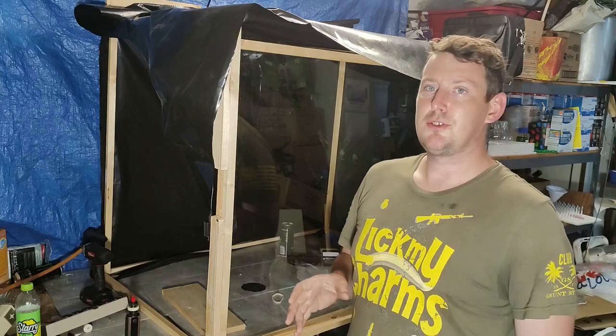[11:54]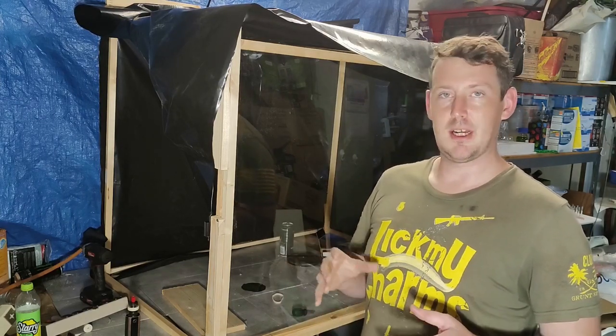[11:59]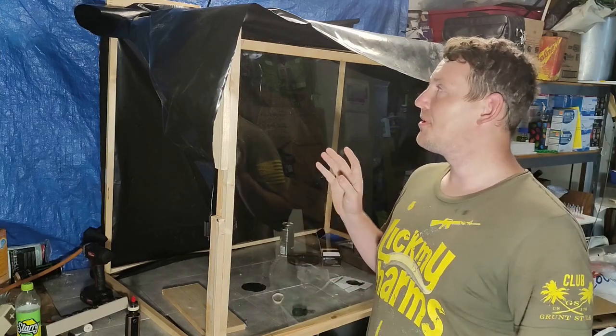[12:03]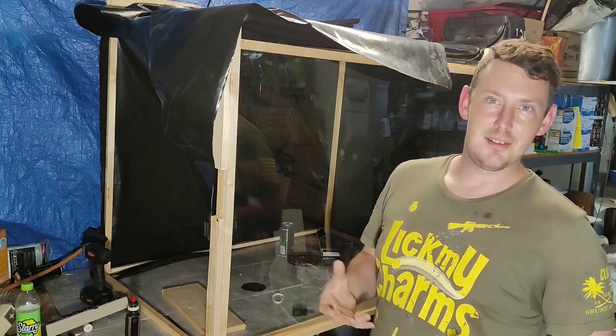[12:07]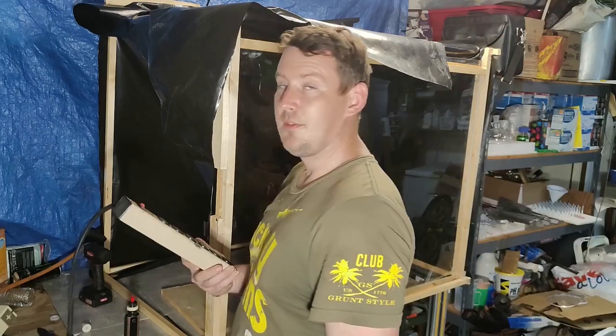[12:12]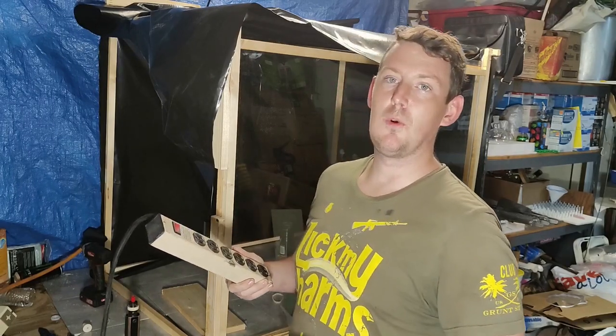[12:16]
While you're installing the side panels and the top and the bottom and sealing everything in, always make sure your electricity and whatever fittings you have for your water, if you're doing it external or anything else, make sure you have your stuff ran through and know where it's going to go before you seal everything in, and then you have to start cutting holes in stuff you didn't want to in the first place. And for me, that's going to be a 6 power strip outlet, and then I'll be running water lines in and out of it as well.
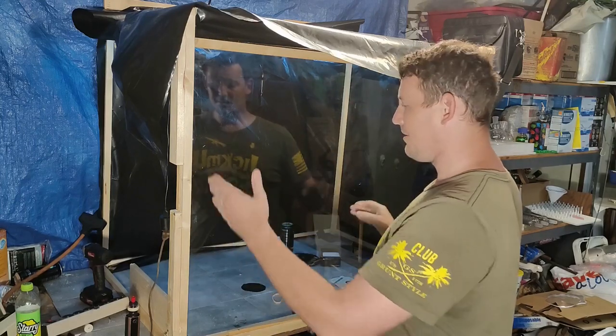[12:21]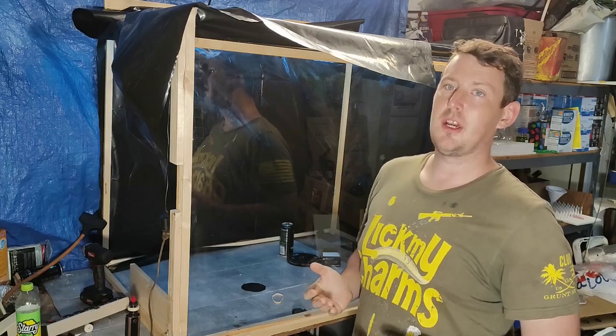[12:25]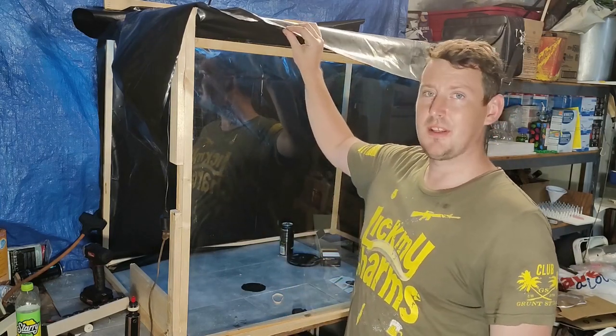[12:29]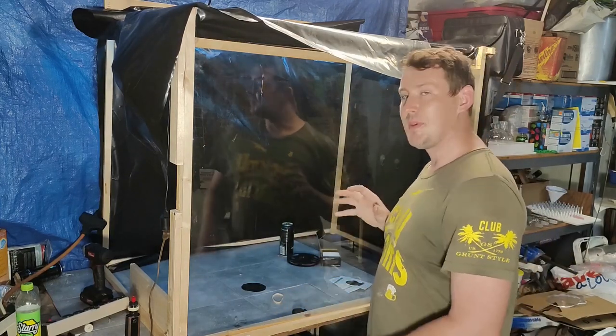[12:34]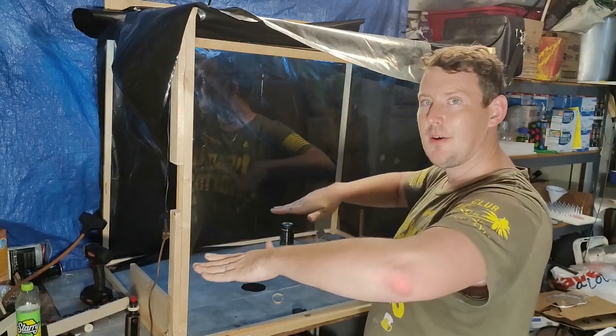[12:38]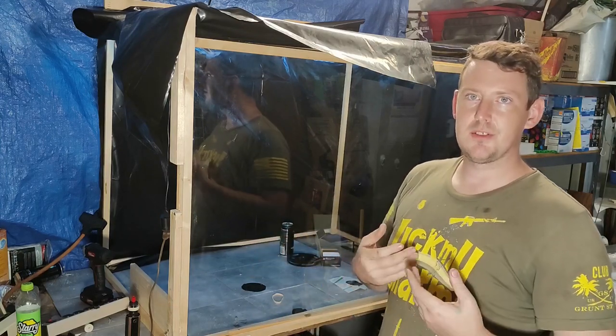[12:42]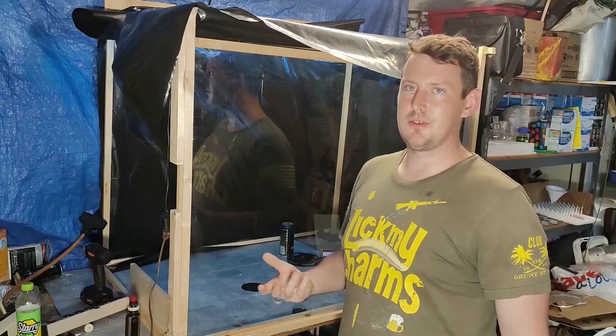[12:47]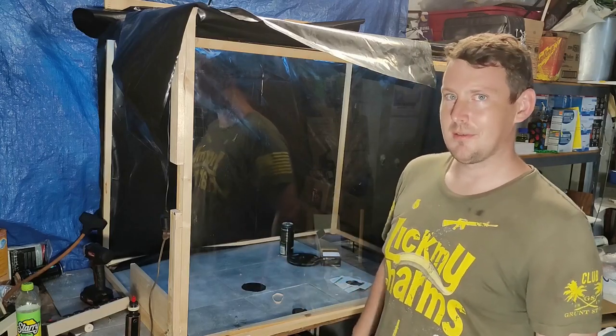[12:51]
Top, side, and the bottom. If you're doing wood or metal, it's probably okay to mount it from the bottom, but because I'm using something that's thin and light like this and is very flexible, I'm actually going to do it from the inside, and what I'm going to do is wrap it around the wood and then down to create kind of like a pan liner, so if anything spills, it doesn't immediately try to flow out or start dissolving the caulking I'm going to use around to seal everything in.
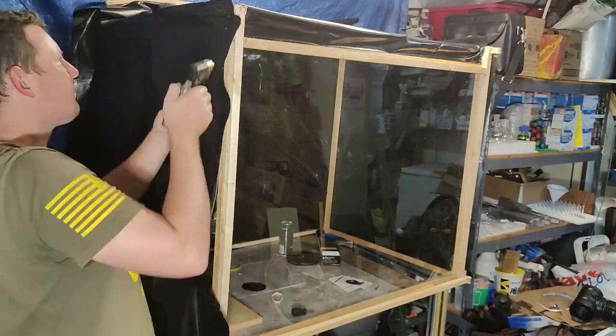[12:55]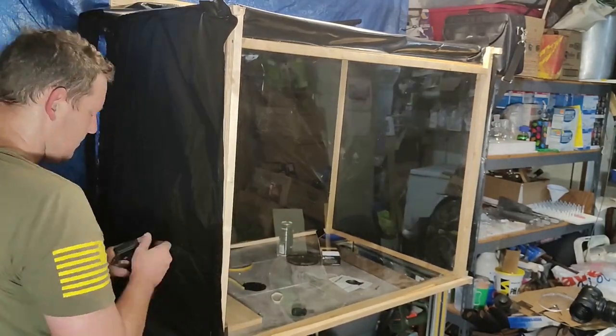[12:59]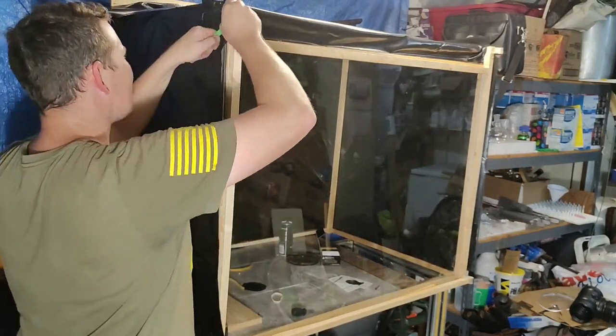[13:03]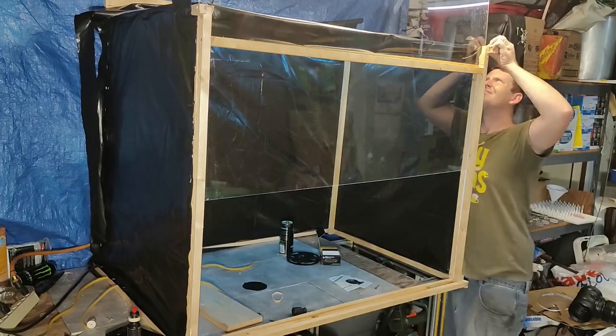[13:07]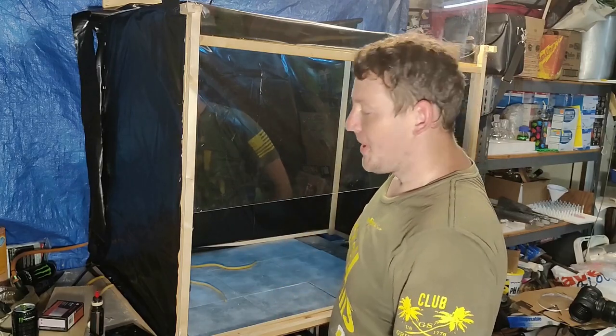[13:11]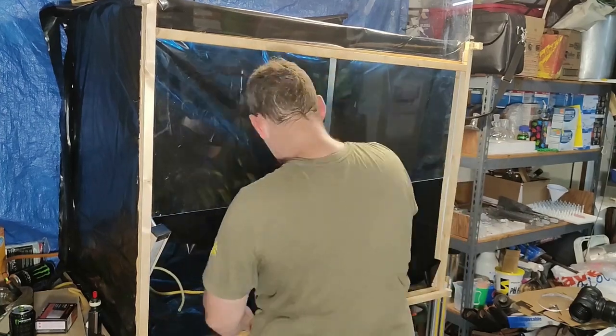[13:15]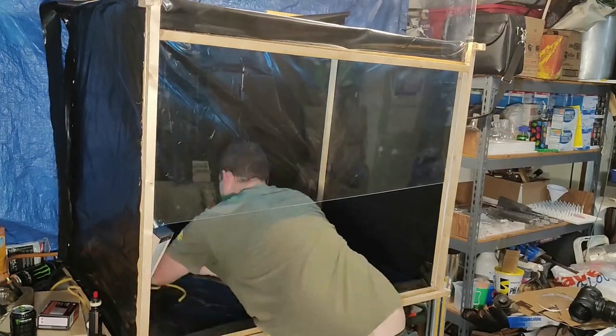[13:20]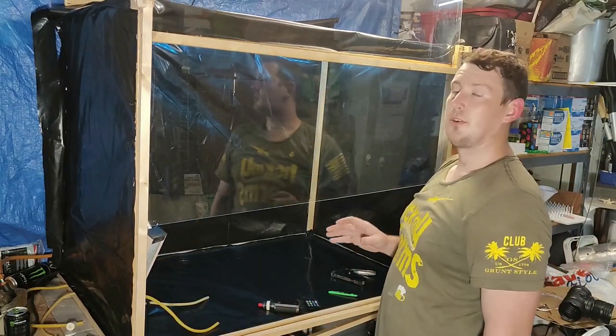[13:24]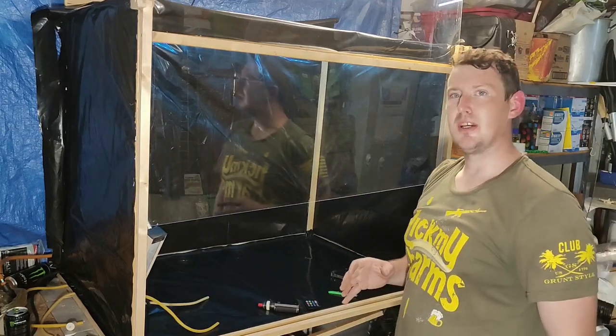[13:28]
Lastly, to install the bottom. Now we have it all about sealed in. This is a great time to get the caulking done inside, just to seal everything up and make sure it's as airtight as you could possibly get it.
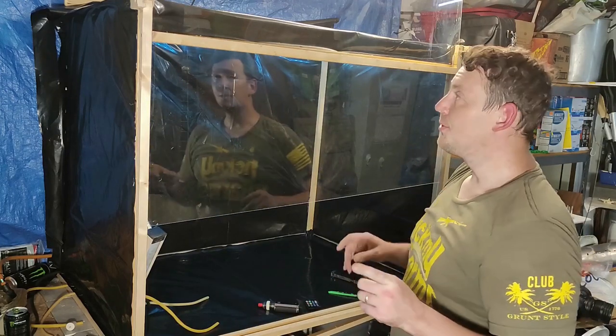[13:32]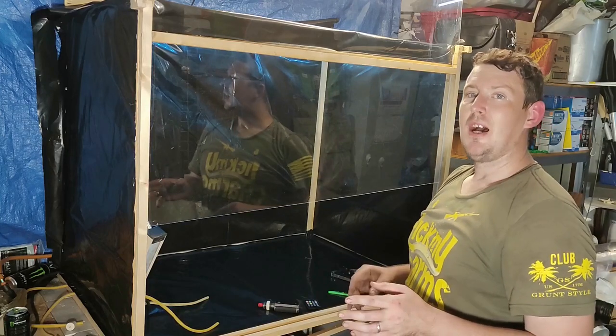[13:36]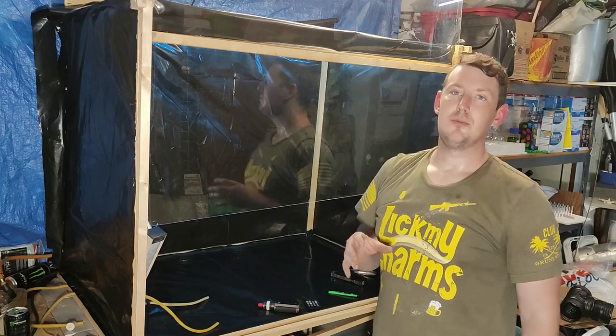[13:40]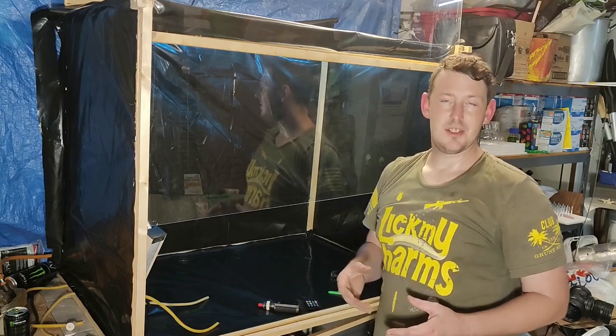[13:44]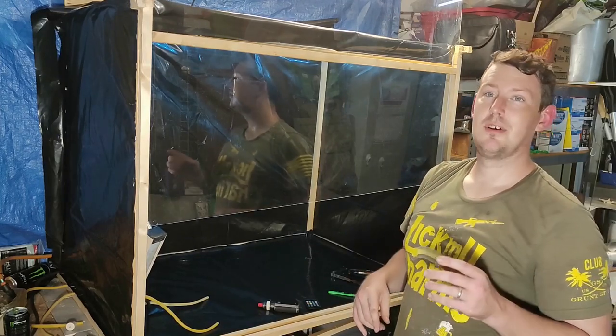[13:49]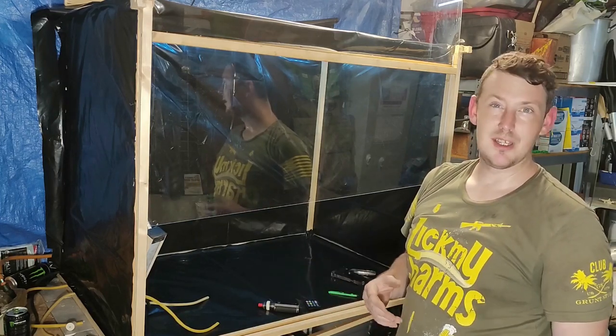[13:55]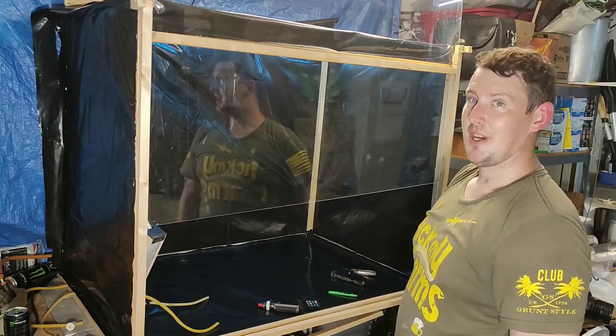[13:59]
And that does include the air intakes, depending on how many you have and where they're at, and also what kind of chemicals you'll be working with. You might want to adjust the materials you're using inside it. That includes both the caulking and the intake adapters. I'm going to be using general purpose silicone because it's resistant to most of what I'll be doing, and it's all light stuff anyway. And then right after that, getting installed the fan.
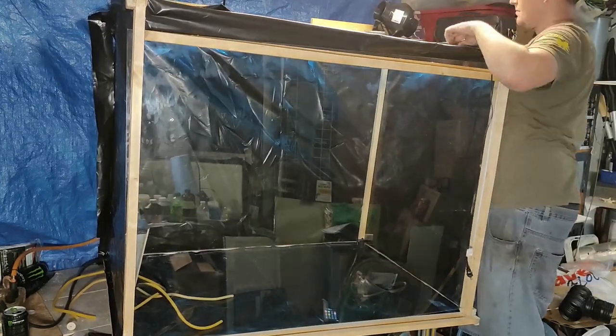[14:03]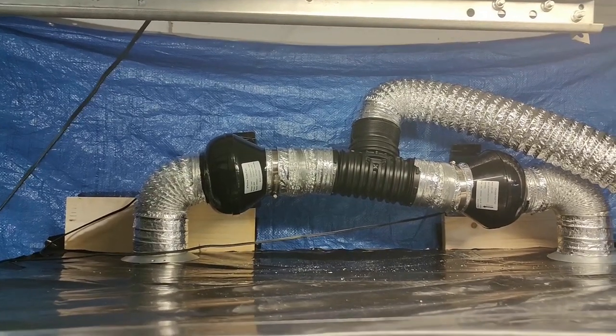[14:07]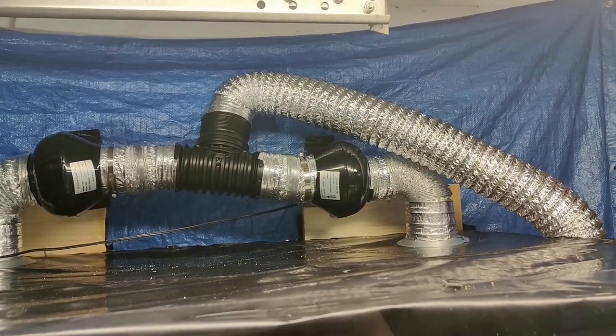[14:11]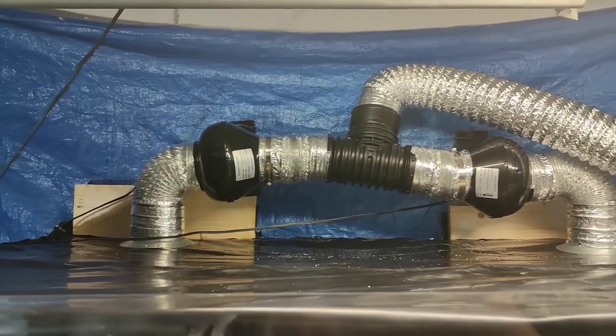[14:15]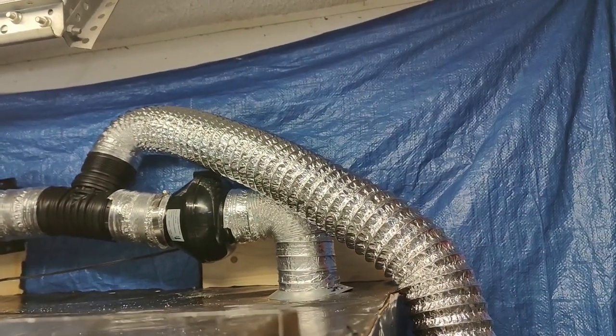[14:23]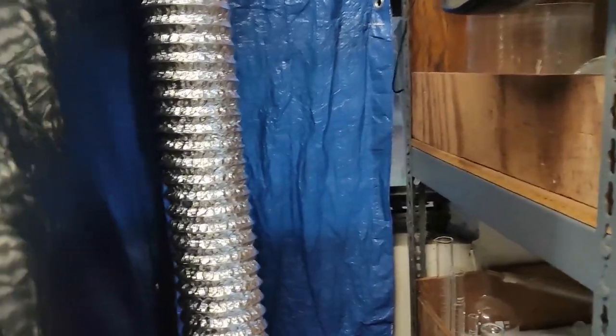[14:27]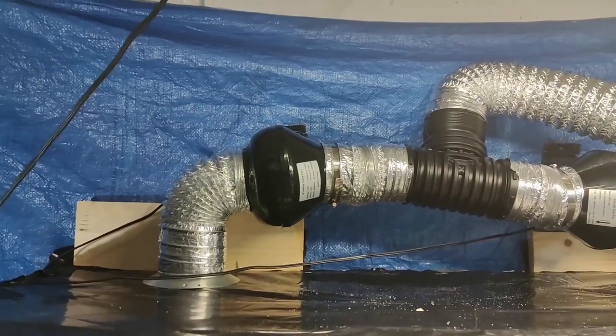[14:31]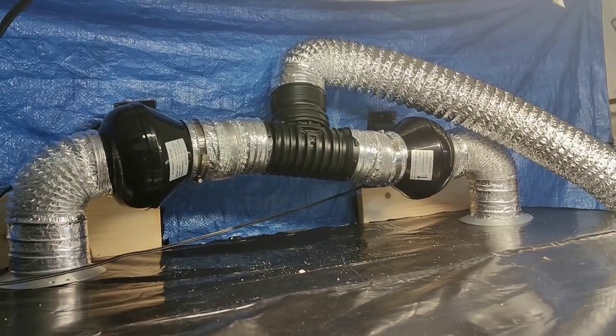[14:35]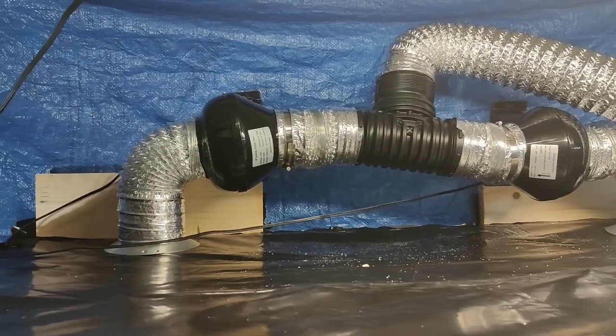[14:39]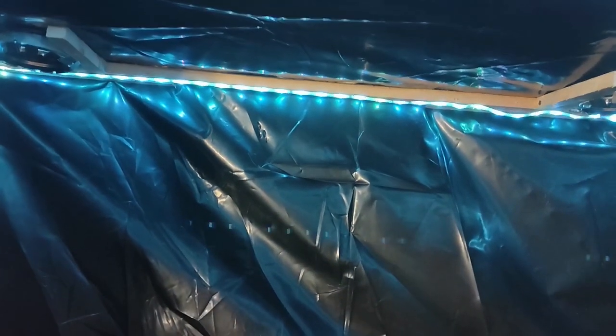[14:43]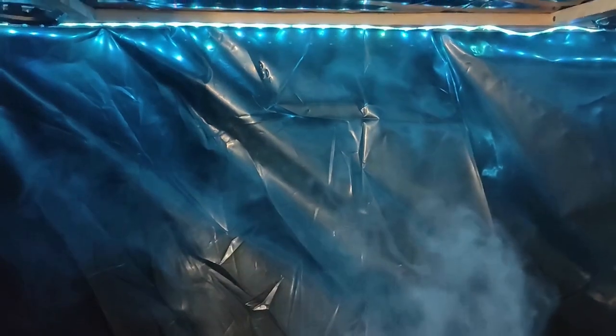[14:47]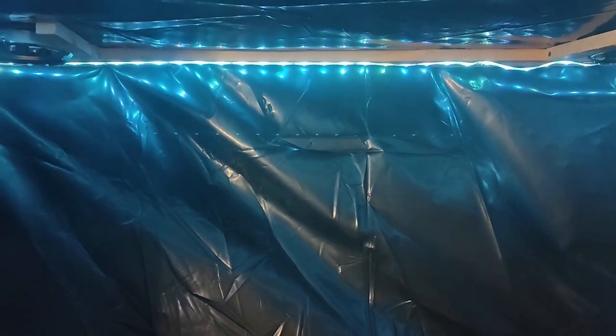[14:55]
So this is the fan work, all the plumbing that sits above the fume hood. It's not sealed in yet, but it's still pretty efficient, at least somewhat, and it'll be going out the window there. I want you guys to hear this when it kicks on and demonstrate what it does even when it's not sealed properly. Close it. That's all just going right up into those.
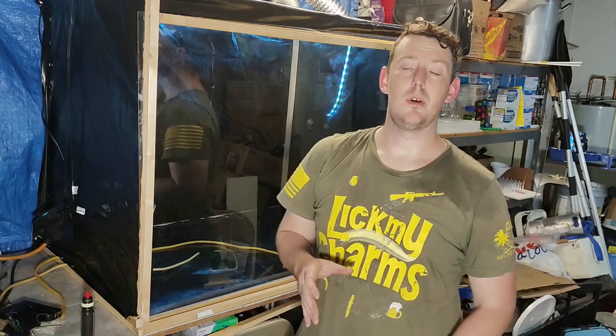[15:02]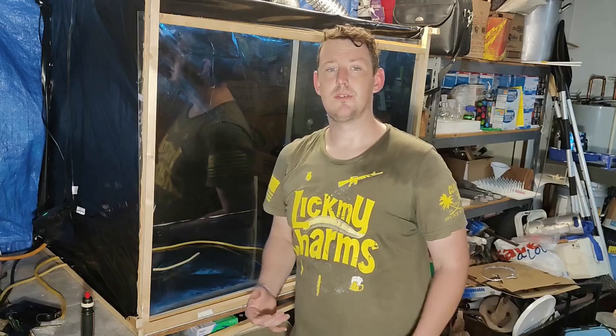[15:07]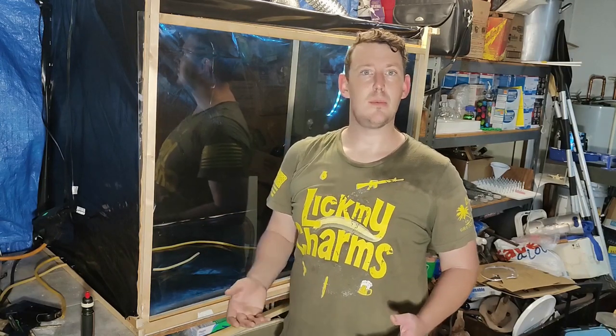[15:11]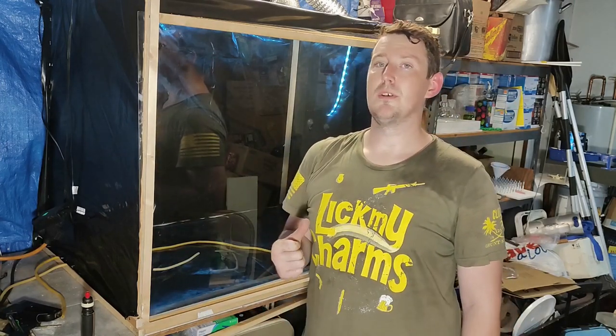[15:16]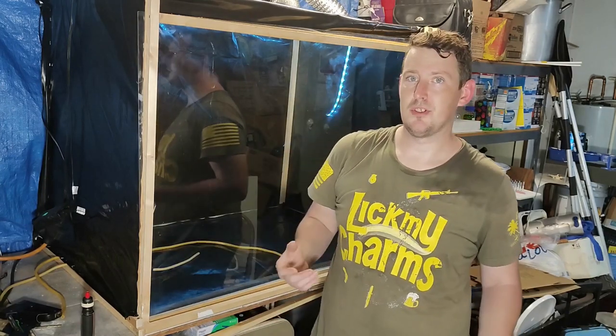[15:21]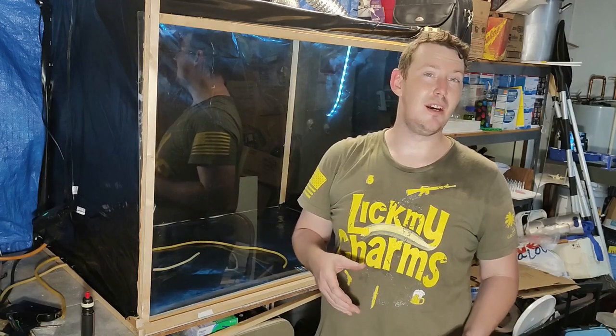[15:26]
I want to also touch really quick on something I really don't see in a lot of videos discussing fume hoods or really venting anything dealing with chemicals, hazards, and stuff like that. And that's filtration. When you're dealing with fume hoods, you're going to have exhaust air that has to go somewhere. And most people just think, well, out. But it's a little bit more complicated than that. And there should be a refining process of the air somewhere in your air exhaust setup.
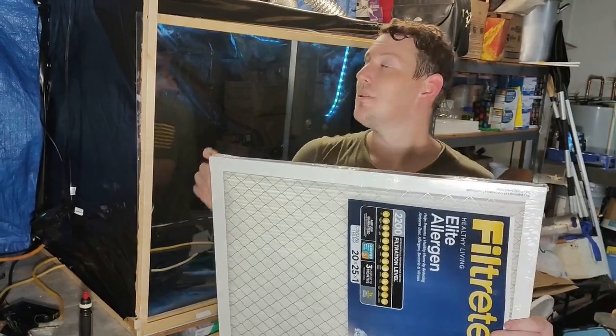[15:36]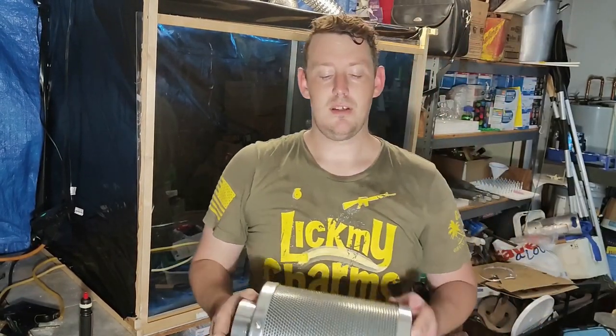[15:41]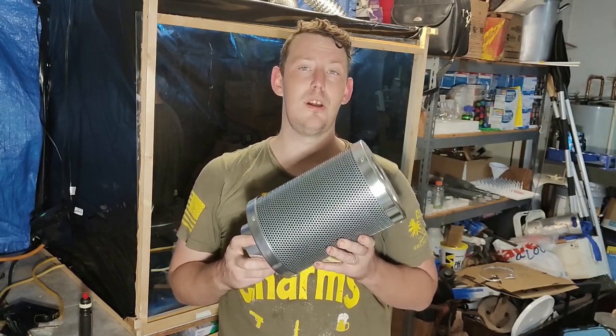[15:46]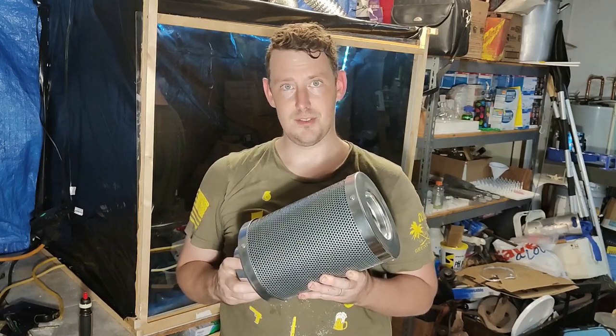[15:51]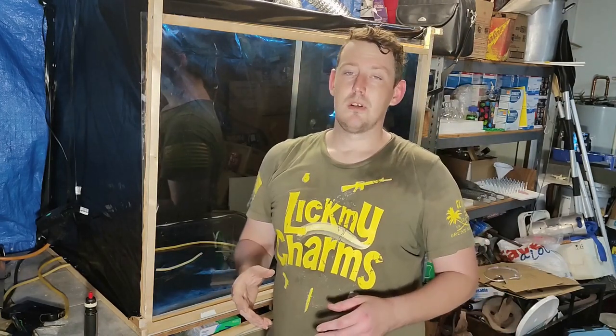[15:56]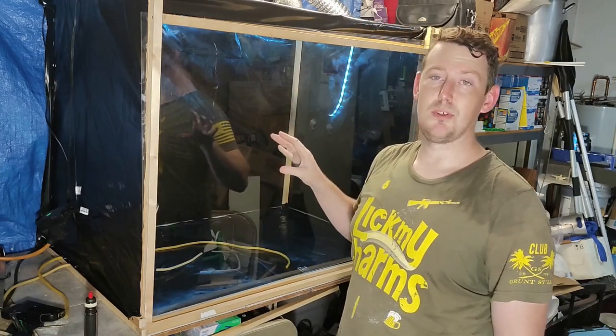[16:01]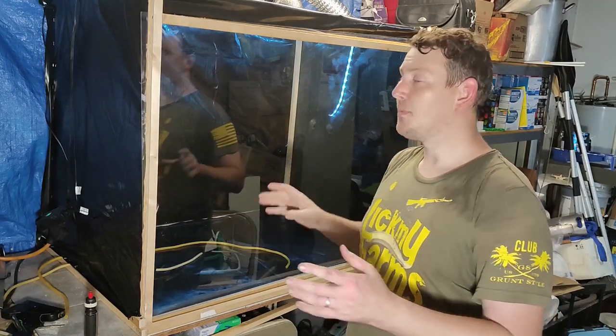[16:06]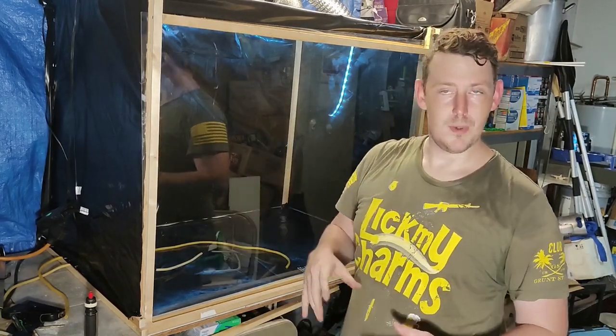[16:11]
This will be in a box, in line, filtering out all the air coming out of my fume hood. And then at the end of it will be a charcoal canister. And this is what's going to reduce the odor and further refine for cleaner air coming out of my exhaust system. There's also different grades of fume hoods. Certain ones will allow air to actually be recirculated inside of it once it gets pushed through a filter, or it just recirculates back in, or possibly even pulls it from here and pushes it back into the air right around you, around the fume hood.
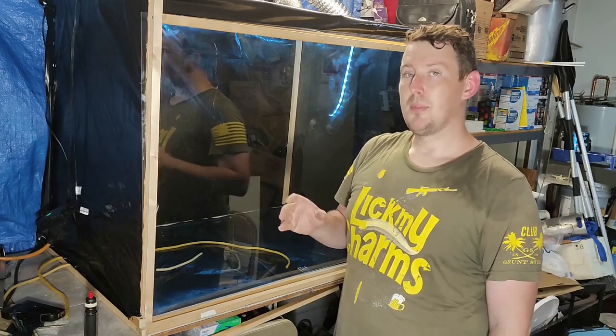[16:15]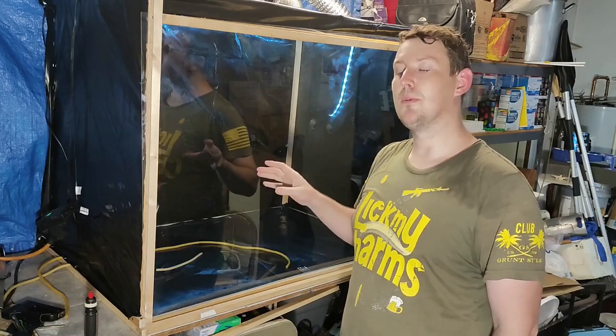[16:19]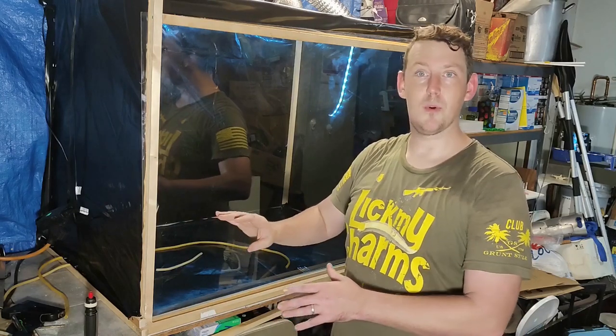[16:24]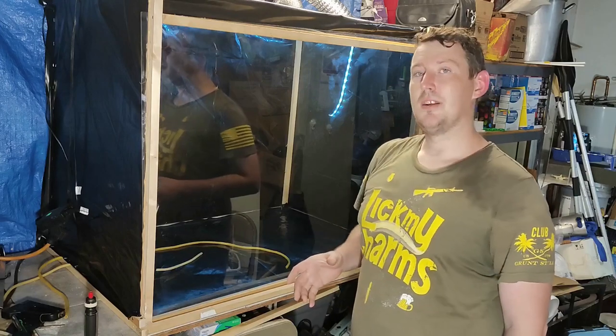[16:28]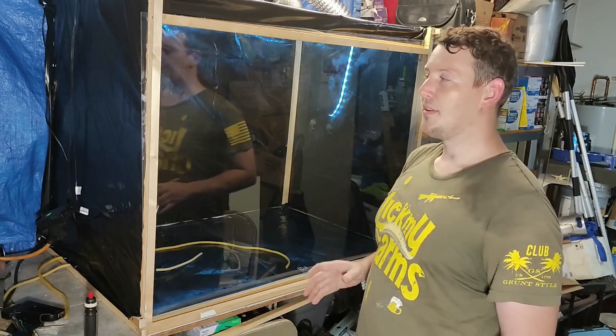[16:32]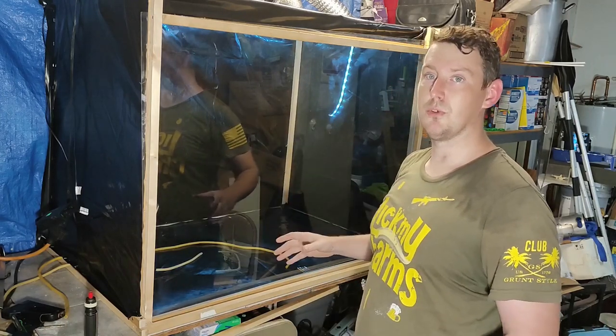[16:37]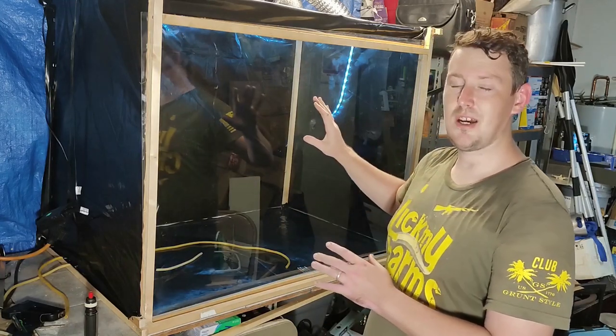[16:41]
Type 2 fume hood, or 2A and above, do not allow any kind of recirculation either into the fume hood or your immediate area. It actually has to be vented completely outside in a way where it has no access coming back in. So this is set up to kind of mimic 2A, and it's not near the quality needed. But the idea is nothing inside the fume hood or in this room is going to get pushed back in. It's going to get sucked up, pushed outside after being refined and into the open air.
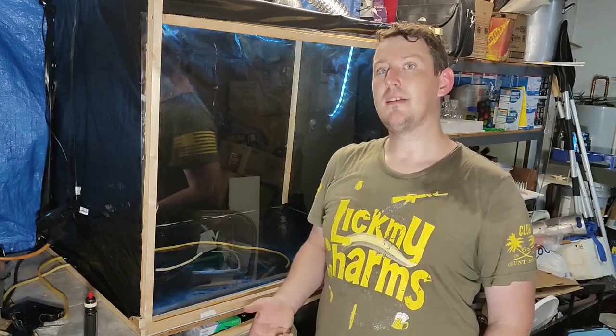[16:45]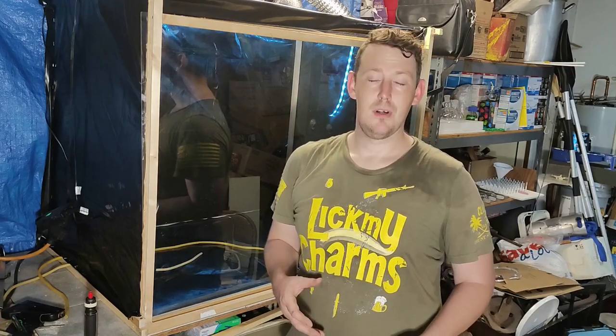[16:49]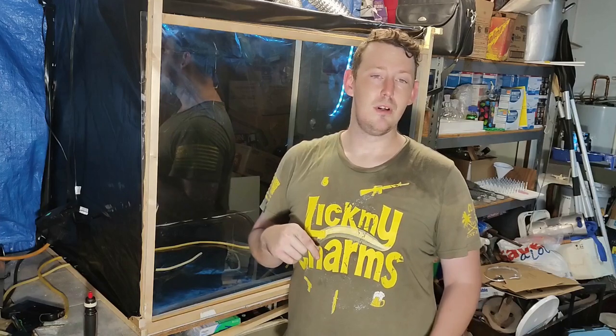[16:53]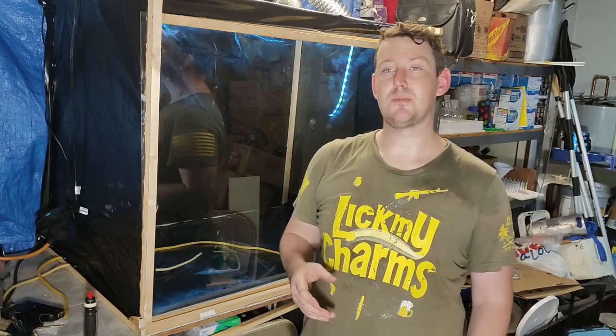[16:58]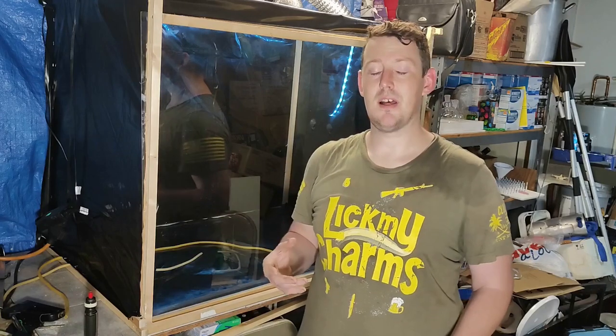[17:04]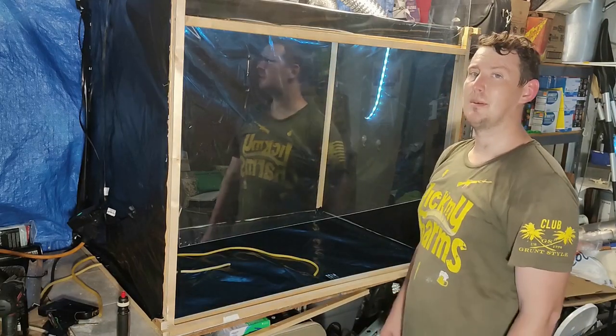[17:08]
There's also a guideline sheet you can kind of work on if you really want to make a better setup. And I'll link in the description below a PDF document. I can't remember the source, but it explains how to properly vent when dealing with fume hood chemicals and stuff like that. And that's it. That's an easy DIY fume hood. Make sure you seal it in properly.